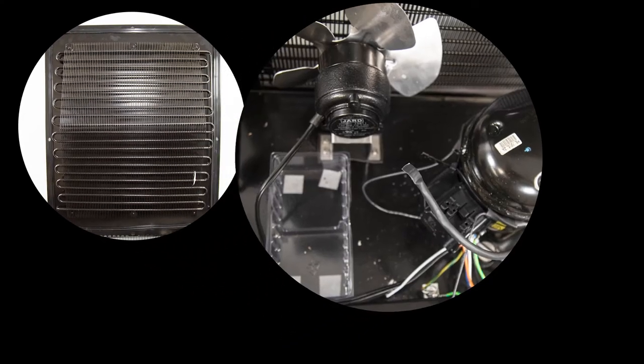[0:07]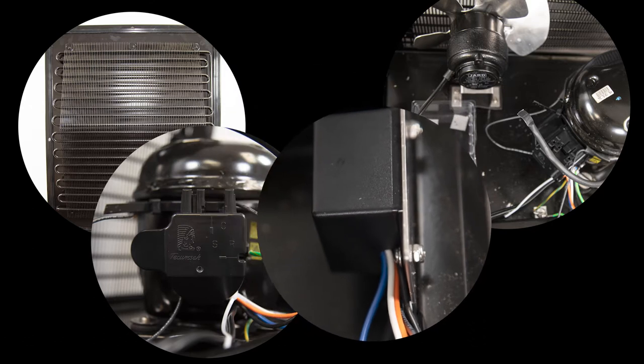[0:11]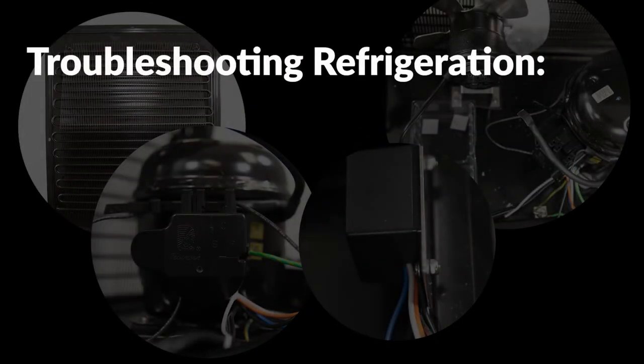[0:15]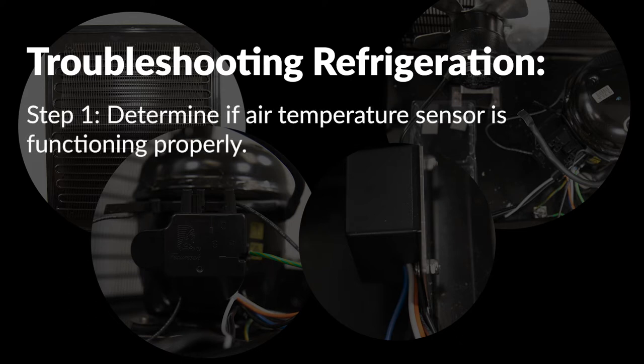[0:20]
Troubleshooting the refrigeration operation is done in two basic steps. Step 1 is to determine if the air temperature sensor appears to be functioning properly. Please see the video link on how to troubleshoot temperature sensors to assist in determining if the cause of the refrigeration issue is related to faulty temperature sensors.
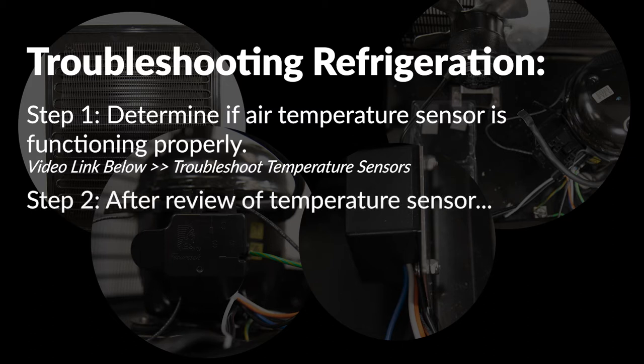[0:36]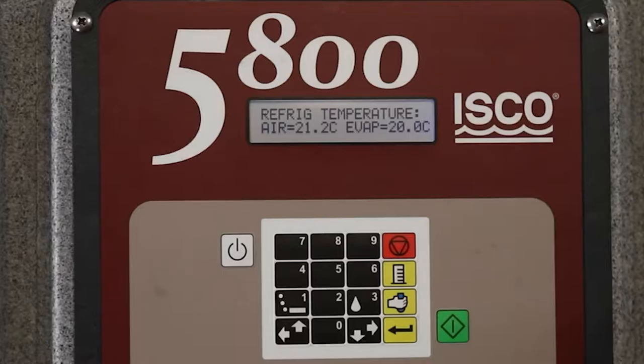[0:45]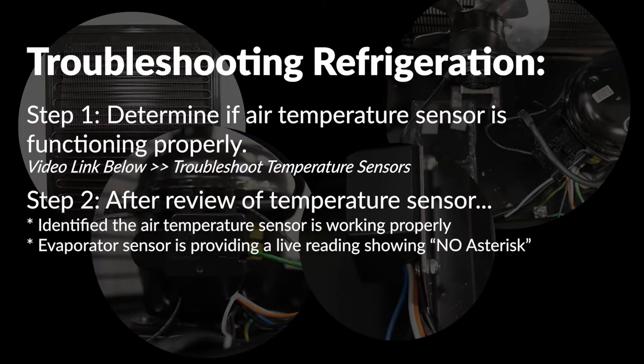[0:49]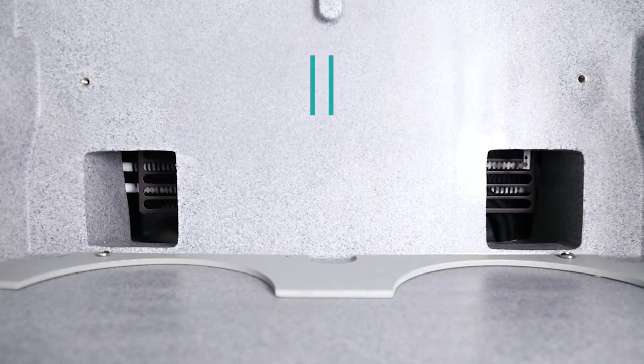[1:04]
Step 2. If you are continuing with this video after reviewing the temperature sensor troubleshooting video, you have identified the air temperature sensor is working properly. The evaporator sensor is providing a live reading showing no asterisk symbol. The sampler is circulating warm air into the sample compartment. There is no large amount of ice buildup on the coils prohibiting cold air circulation.
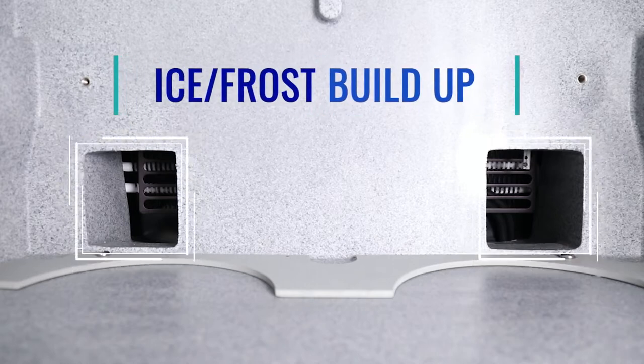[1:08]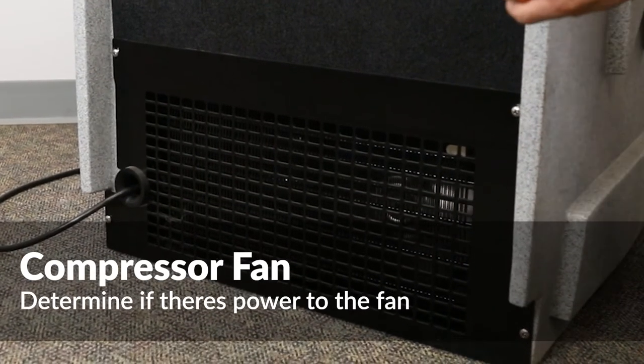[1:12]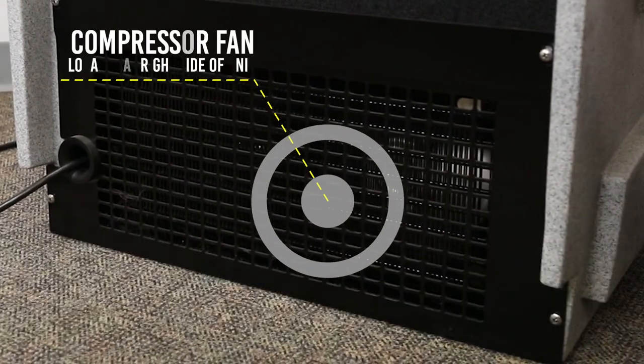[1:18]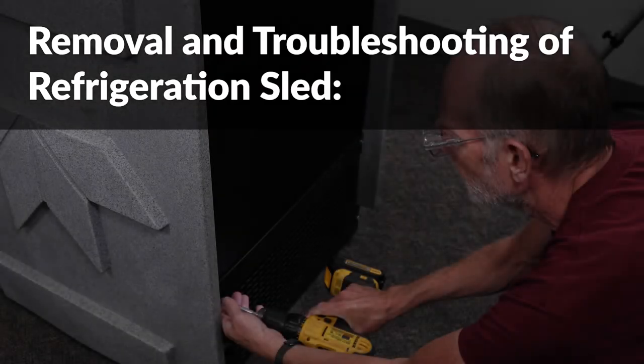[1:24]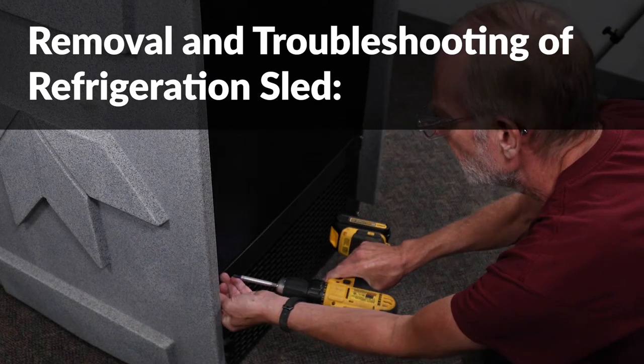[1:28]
Check to see if the compressor fan is running. You should be able to see and feel the air being pushed out of the back of the sampler. The compressor fan might be running, but the compressor itself might not be operating correctly. The next step shows the removal and troubleshooting of the refrigeration sled to determine how to proceed with the repair.
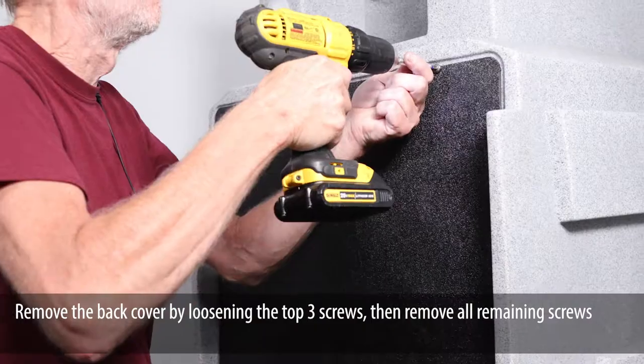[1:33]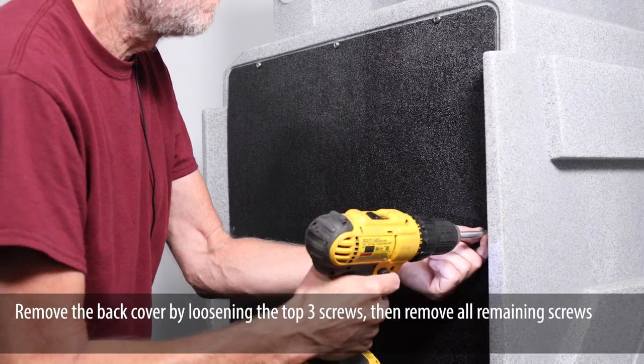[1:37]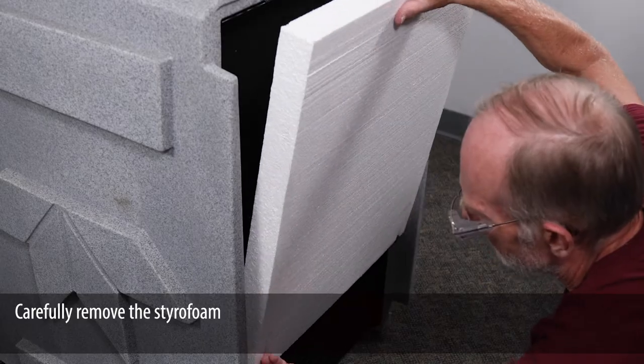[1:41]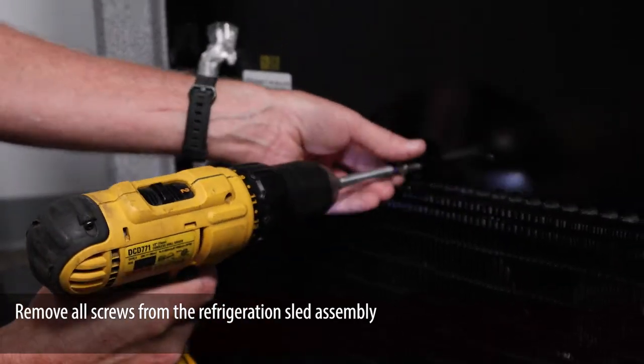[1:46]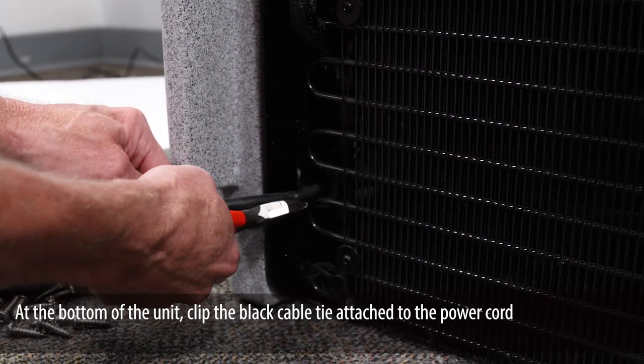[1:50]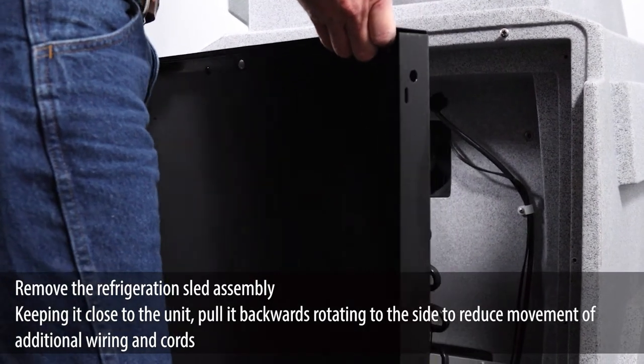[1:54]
From the back of the unit, remove the bottom protection plate. Remove the back cover by loosening the top three screws, then remove all remaining screws. Carefully remove the styrofoam. Remove all screws from the refrigeration sled assembly. At the bottom of the unit, clip the black cable tie attached to the power cord. Remove the refrigeration sled assembly.
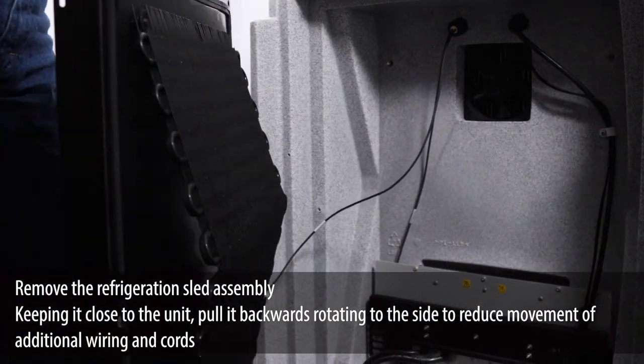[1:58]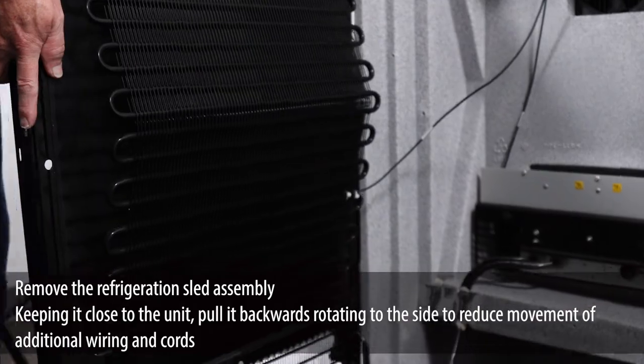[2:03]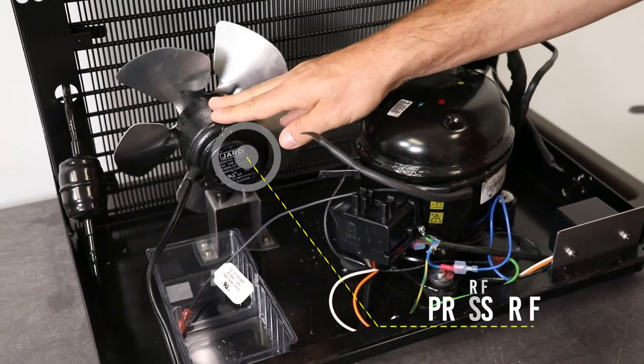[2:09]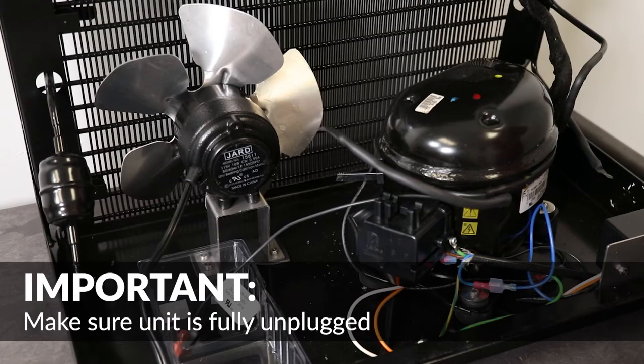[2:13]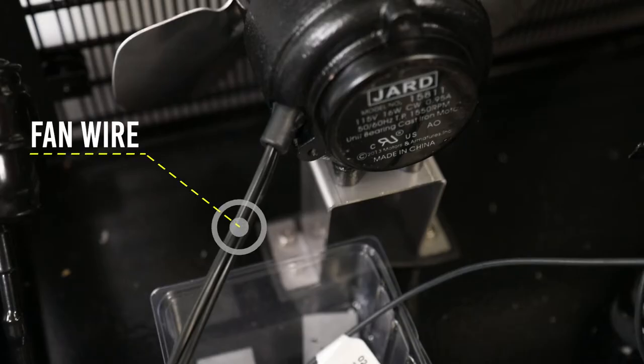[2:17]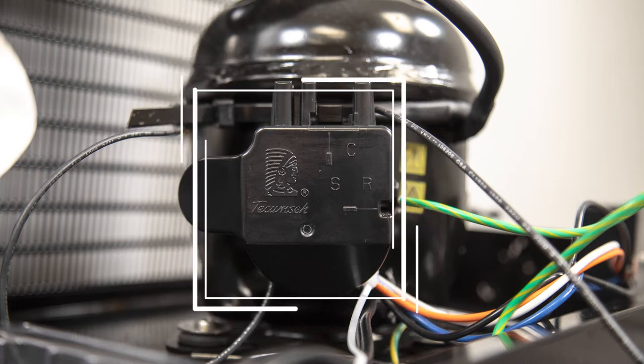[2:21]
Keeping it close to the unit, pull it backwards, rotating to the side to reduce movement of additional wiring and cords. In order to verify if the compressor is actually running, the compressor fan power must be removed to be able to sense the small amount of vibration coming from a running compressor. Locate the compressor fan power harness and follow it back to the compressor side cover.
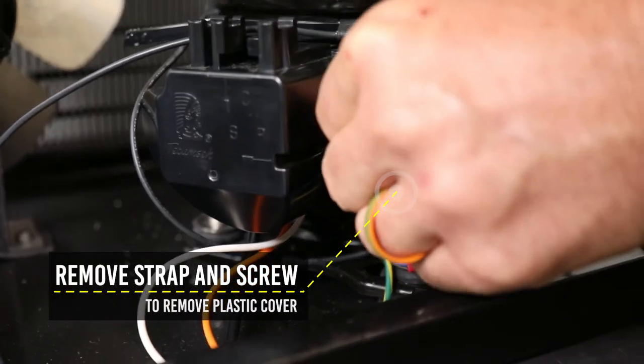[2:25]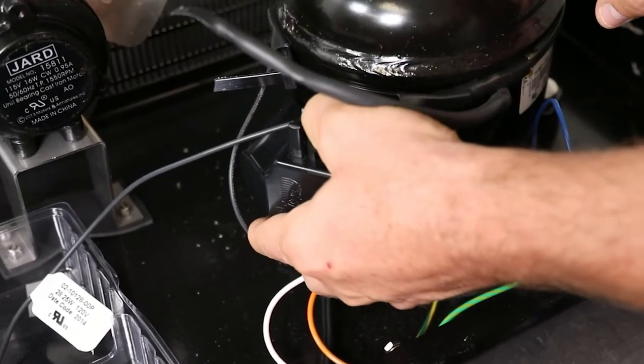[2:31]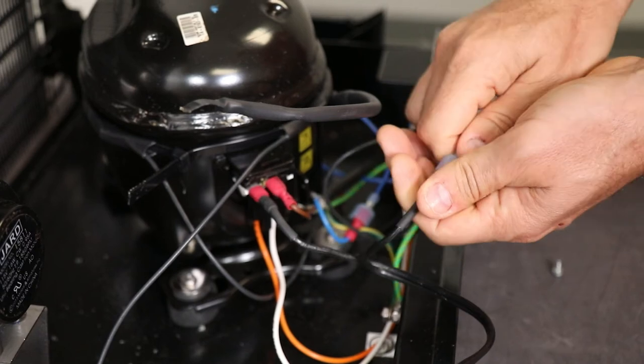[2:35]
Remove the grounding strap and screw from the side of the compressor wiring cover. Press the locking tab and pull to remove the electrical connection cover on the side of the compressor. Locate and disconnect the fan wire going to the compressor relay box.
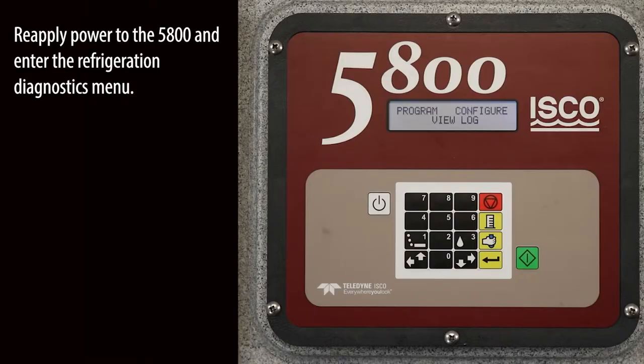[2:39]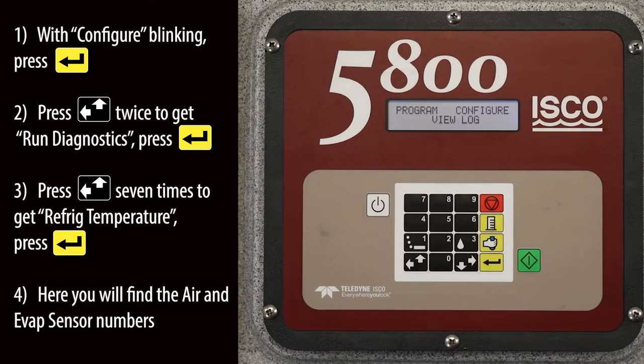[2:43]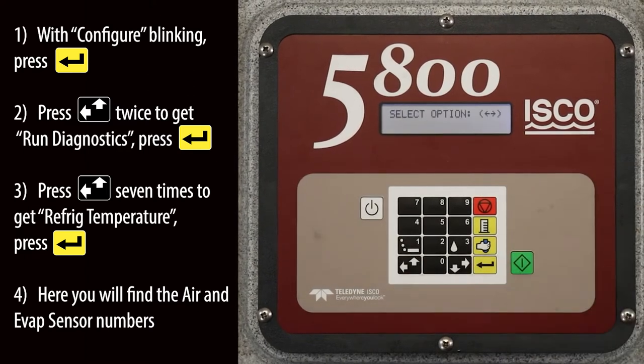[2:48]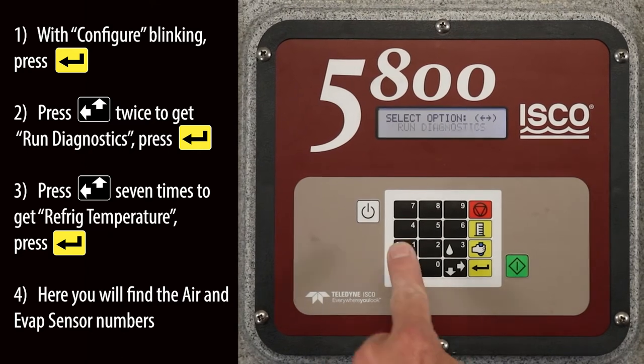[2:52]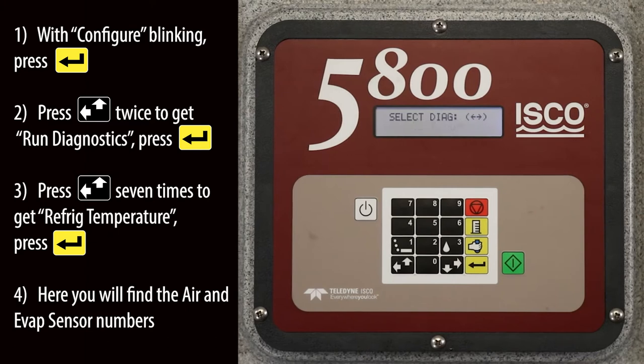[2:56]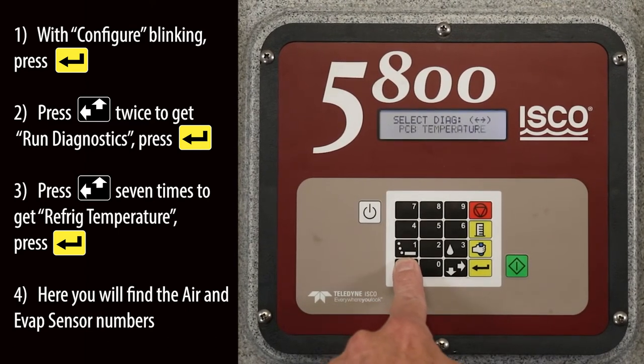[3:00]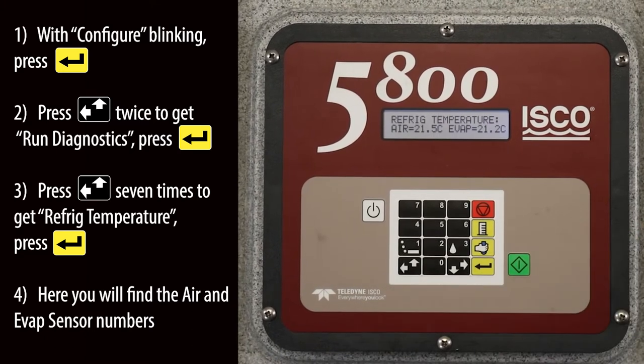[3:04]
Reapply power to the 5800 and enter the refrigeration diagnostics menu. With configure blinking, press the enter key. Press the left up arrow key twice to get run diagnostics, then press the enter key. Press the left up arrow key 7 times to get refrige temperature, then press the enter key. Here you will find the air and evap sensor numbers.
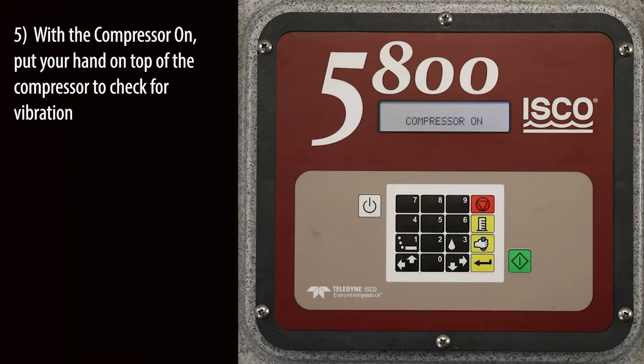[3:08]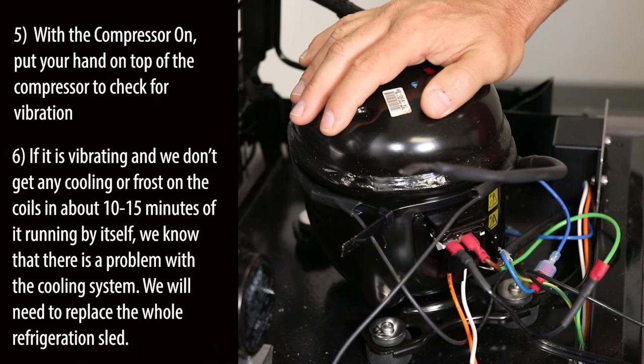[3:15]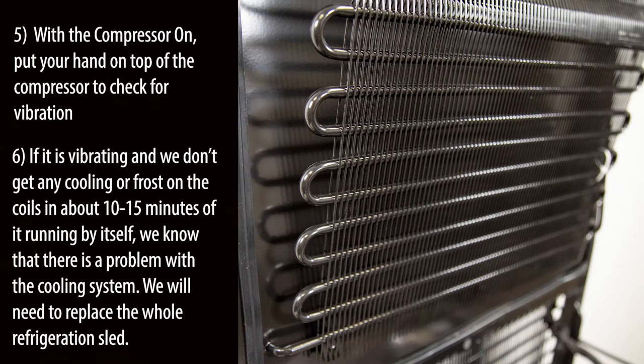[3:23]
With the compressor on, put your hand on top of the compressor to check for vibration. If it's vibrating and there isn't any cooling or frost on the coils in about 10 to 15 minutes of it running by itself, we know that there is a problem with the cooling system. We will need to replace the whole refrigeration sled.
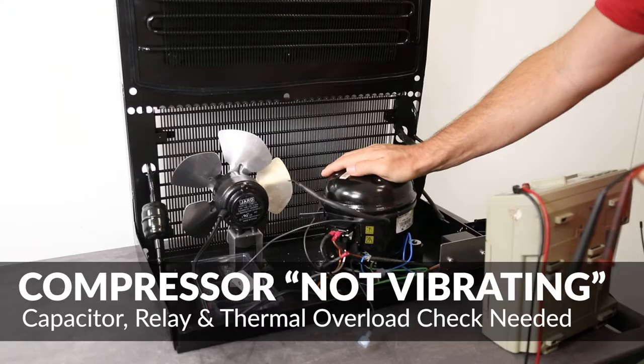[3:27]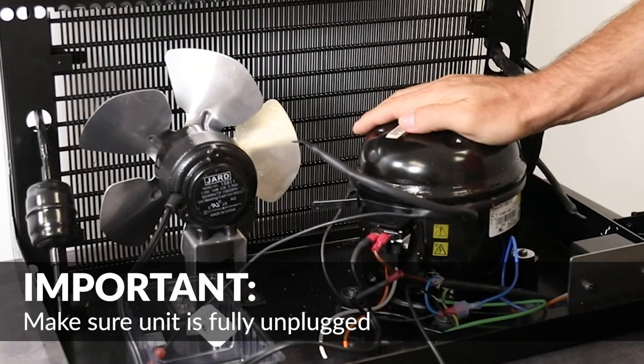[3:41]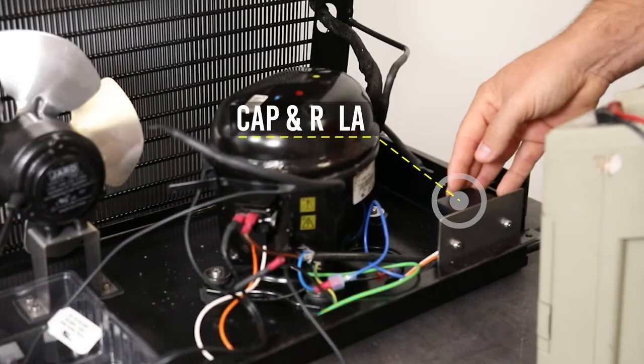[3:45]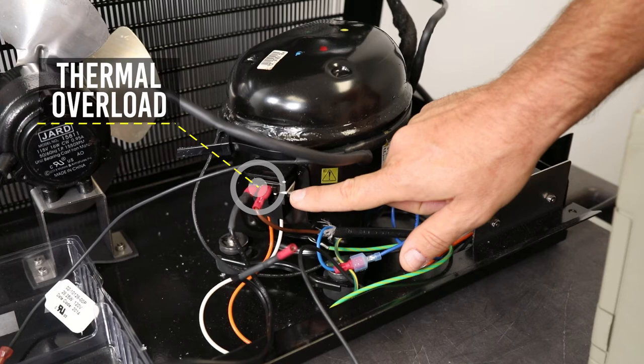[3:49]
With the compressor fan removed from the circuit and the 5800 powered up, if the compressor is not running by indication of slight vibration, the capacitor, relay, and thermal overload must be checked. AC power must be removed for these next checks. The cap and relay box will need to be checked, as well as the thermal overload mounted directly on the compressor.
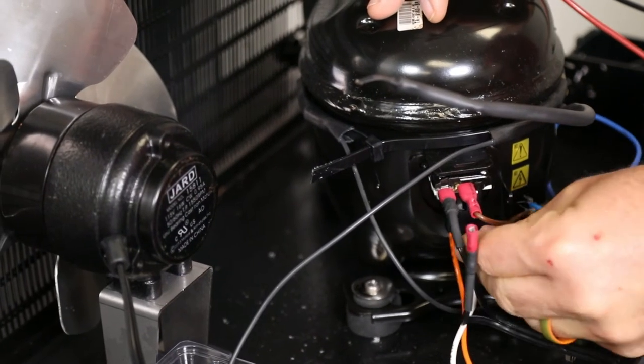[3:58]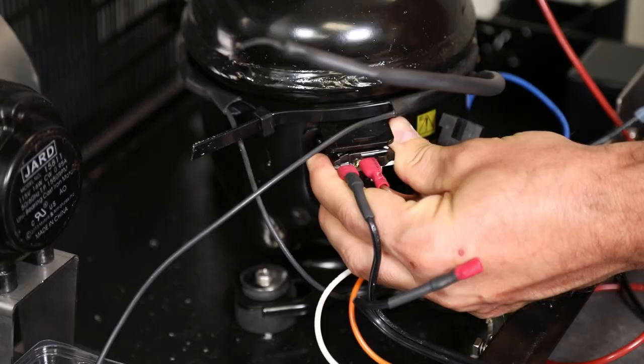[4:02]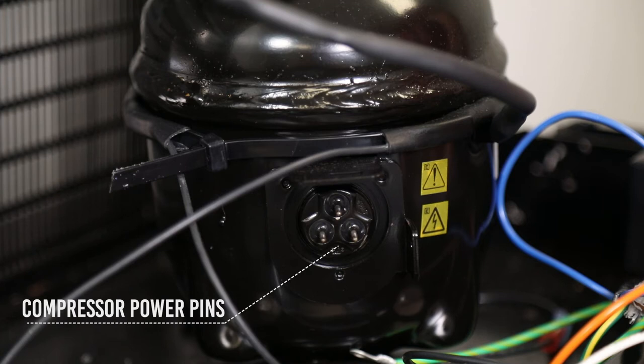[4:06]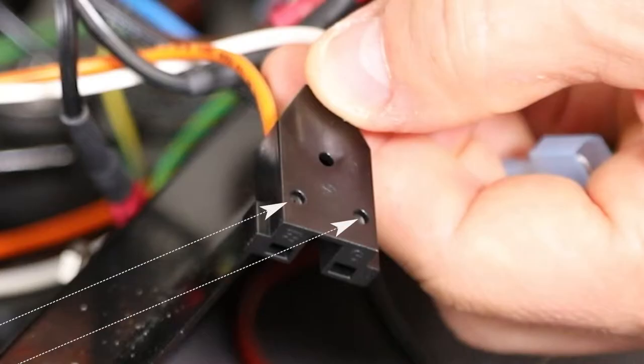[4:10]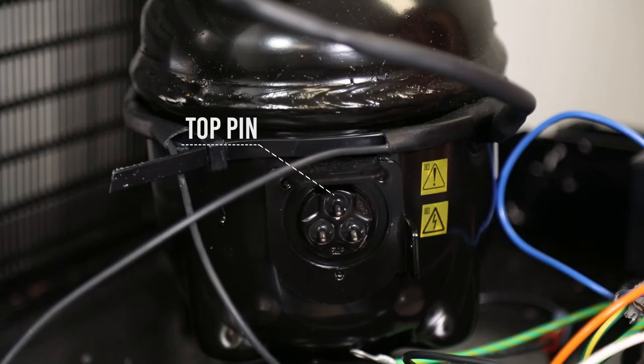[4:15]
Locate and remove the compressor power connection, making note that the orange wire is positioned closest to the compressor fan motor. Locate and remove the thermal overload wiring connection from the compressor. The compressor power pins connect to the compressor power harness with the orange and white wiring. The top pin connects to the thermal overload device.
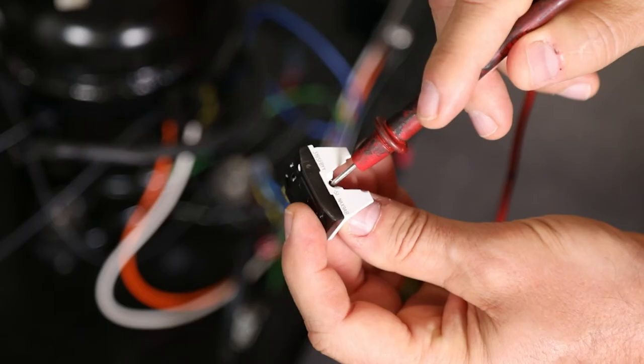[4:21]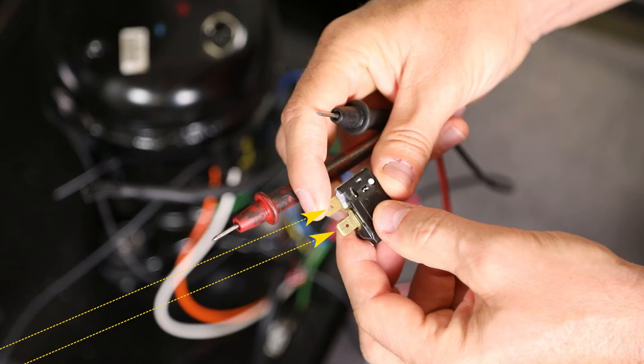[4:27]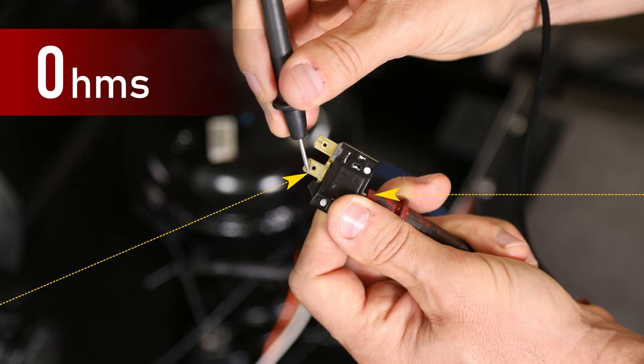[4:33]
Using a digital voltmeter measuring resistance, connect one lead to the single socket terminal on the thermal overload and measure resistance from the single socket to each of the terminals. There should be nearly 0 ohms resistance between these points. Having even a few ohms resistance can indicate a faulty thermal overload device that would need to be replaced.
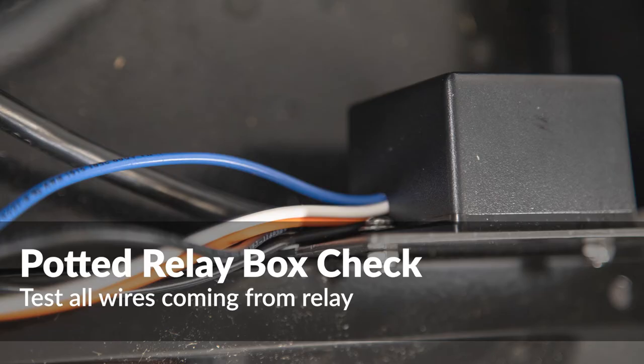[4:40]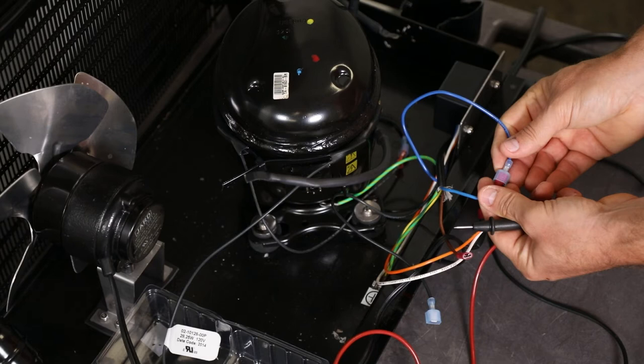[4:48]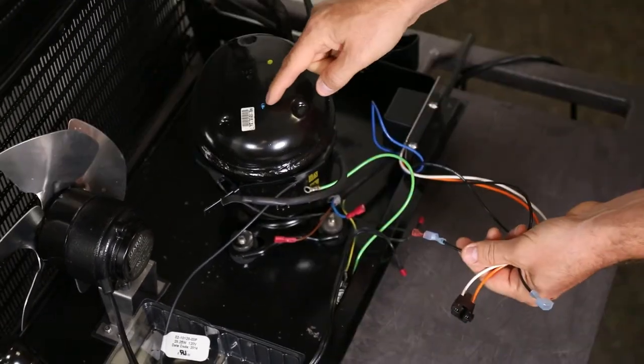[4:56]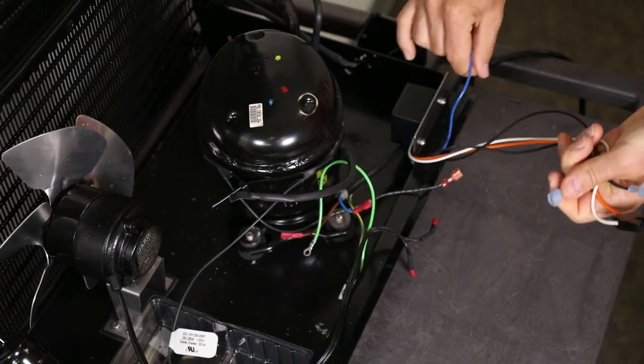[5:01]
The compressor relay can be checked. The relay is completely potted, so the checks must be done on the attached wiring connections. Locate and remove the blue AC return line that connects the relay box to the AC power cord. On newer models, locate and remove the compressor heater wire harness so that all wiring from the relay box is now isolated from the unit.
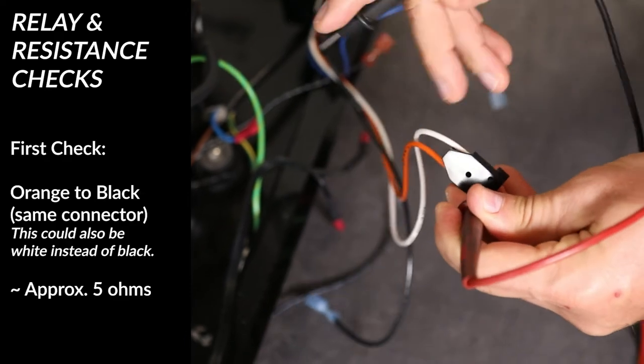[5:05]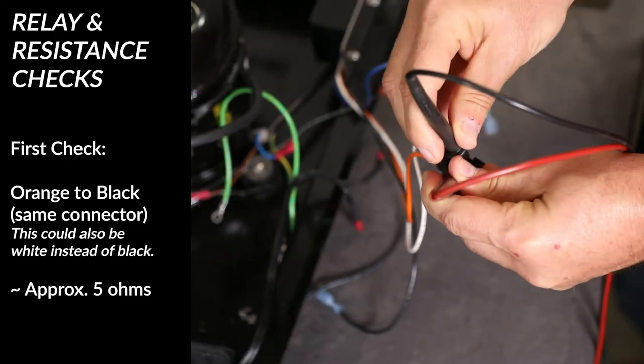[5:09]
Check the resistance of the compressor power harness by measuring resistance between the two connections. Resistance should be approximately 5 ohms.
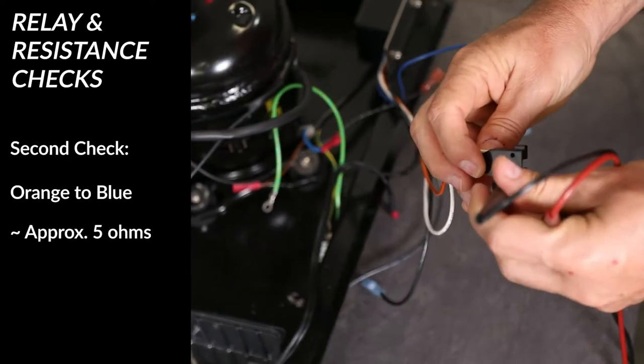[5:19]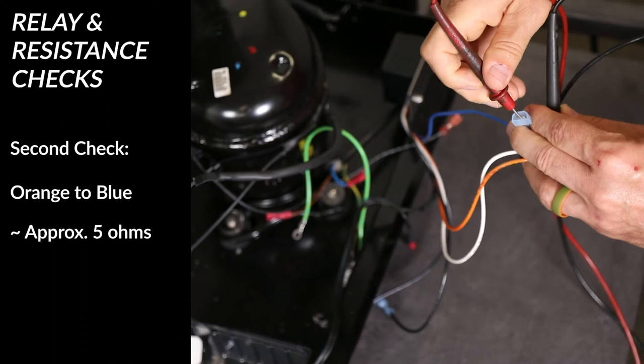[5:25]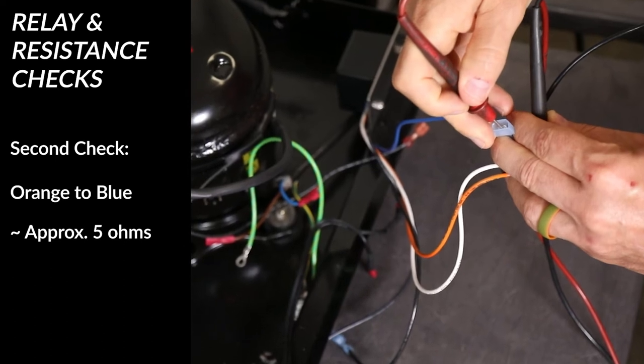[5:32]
Any value higher than 7 ohms would indicate a faulty relay, and the potted relay box will need to be replaced. Checking the resistance of the blue AC return line by connecting one lead of the voltmeter to the orange wire connector on the compressor power harness to the blue AC return line coming from the relay box, and measure resistance of approximately 5 ohms.
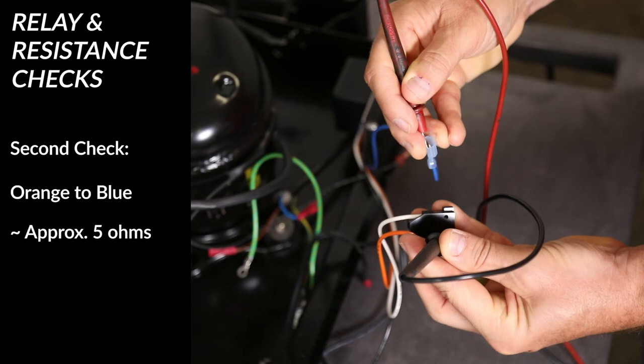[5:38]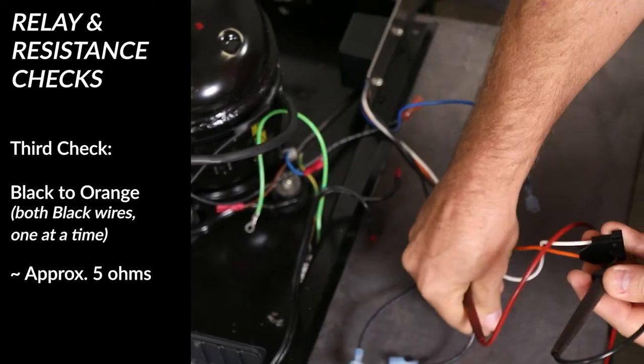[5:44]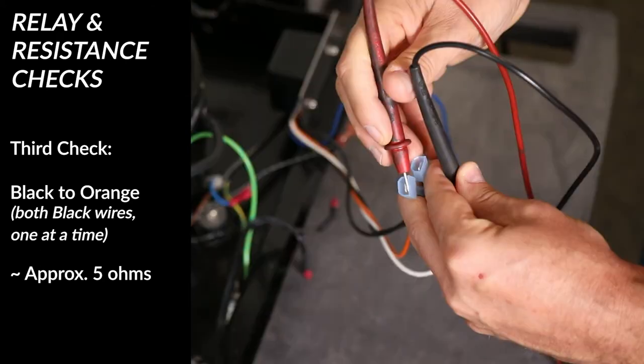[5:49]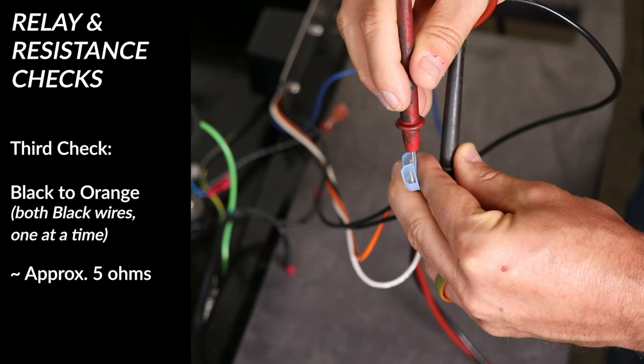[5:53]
Any value higher than 7 ohms would indicate a faulty relay, and the potted relay box will need to be replaced. Check the resistance from each of the black wires on the potted relay box to the orange wire connection for the compressor power connector. Either connection should measure 5 ohms.
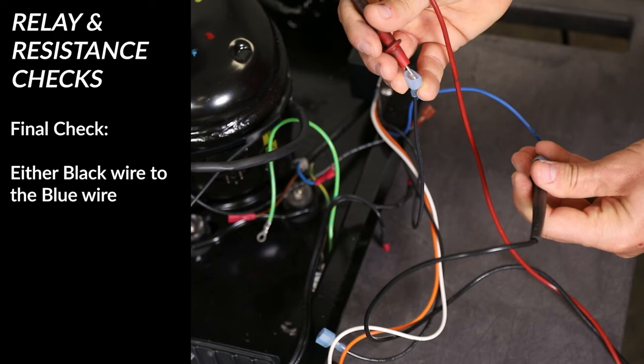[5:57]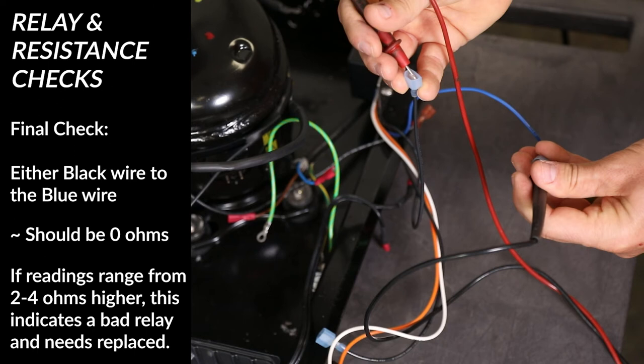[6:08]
Check the resistance from either of the black wires on the potted relay box to the blue AC return line coming from the relay box. Either connection should measure 0 ohms. If readings range from 2 to 4 ohms higher, this indicates a bad relay and needs replaced.
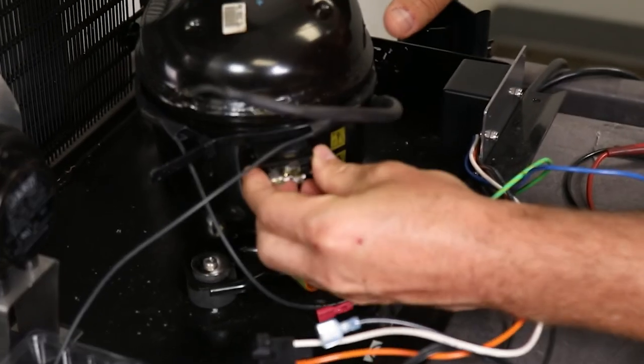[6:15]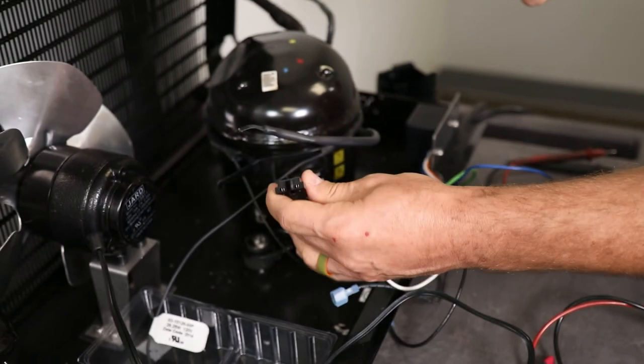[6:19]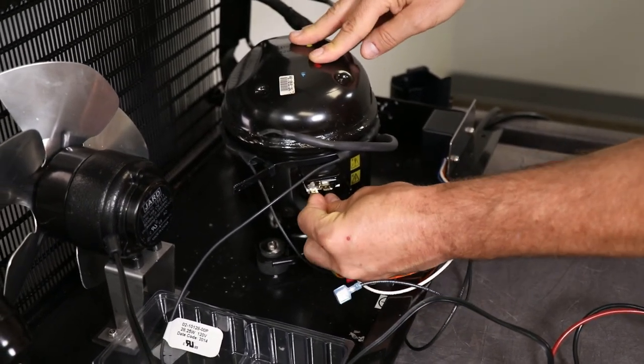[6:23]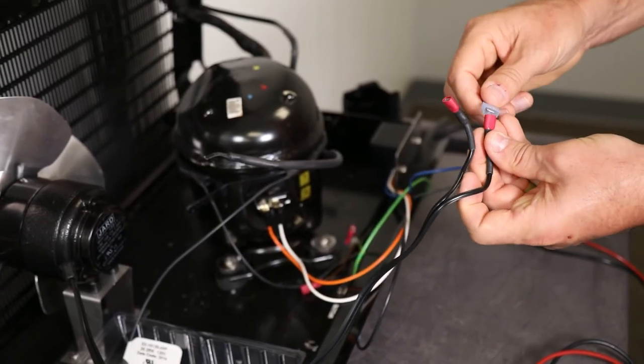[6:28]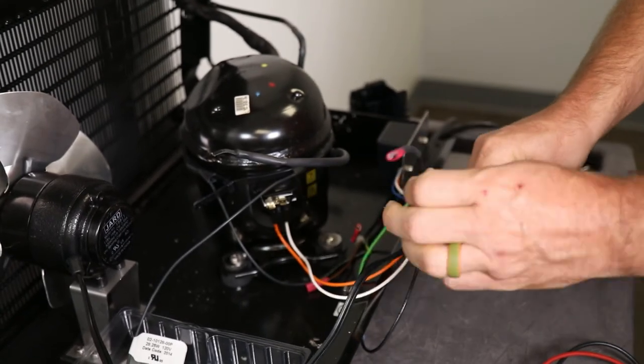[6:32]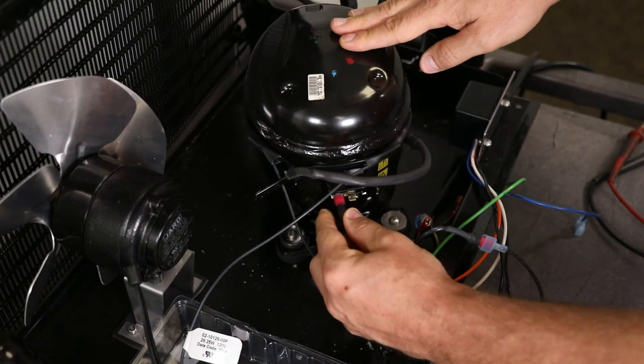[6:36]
Reinstall the compressor thermal overload to the top pin on the compressor. Next, install the compressor power connector, making sure that the orange wire connection is positioned closest to the compressor fan motor. Locate and connect one of the wires from the compressor fan to one of the black wires coming from the potted relay box. Connect the other compressor fan wire to the left connector on the compressor thermal overload.
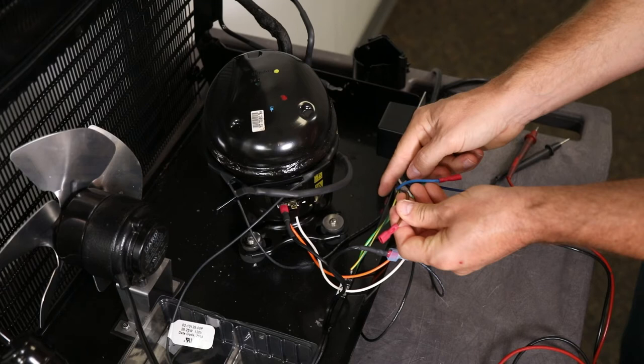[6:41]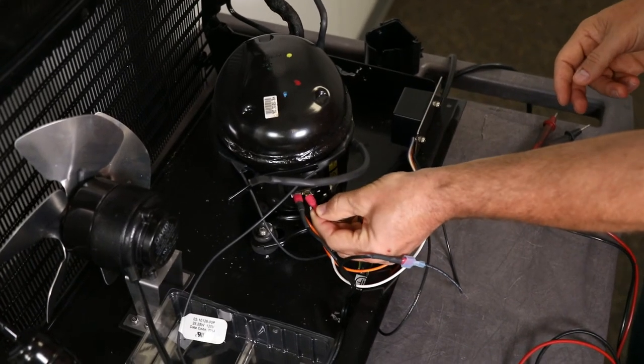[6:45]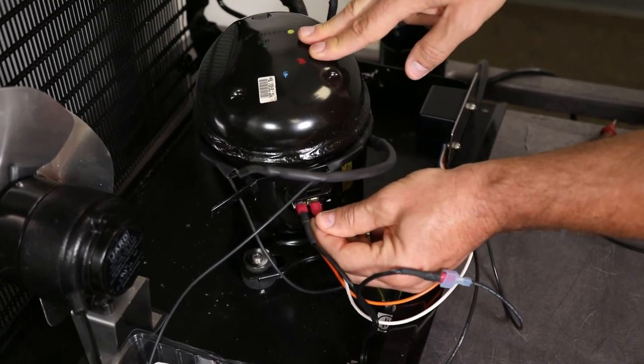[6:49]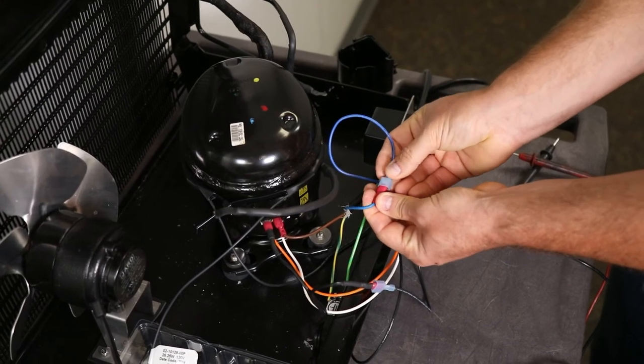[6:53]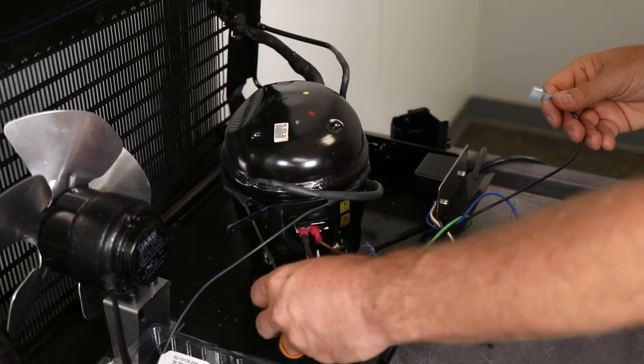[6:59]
Locate the AC power wiring harness coming from the 5800 power supply. Connect the brown wire from this harness to the right side connector on the thermal overload on the side of the compressor. Connect the blue wire from the potted relay box to the blue wire coming from the 5800 power supply harness. Connect the remaining black wire from the potted relay box to the compressor heater harness.
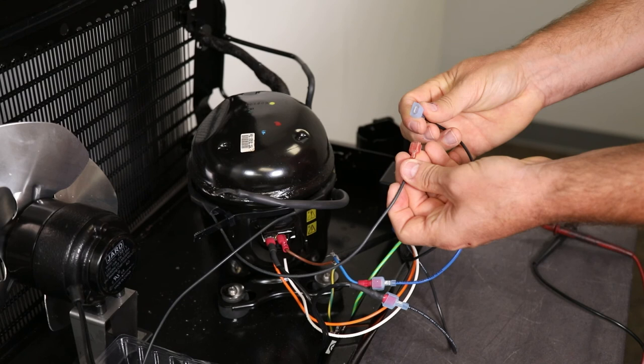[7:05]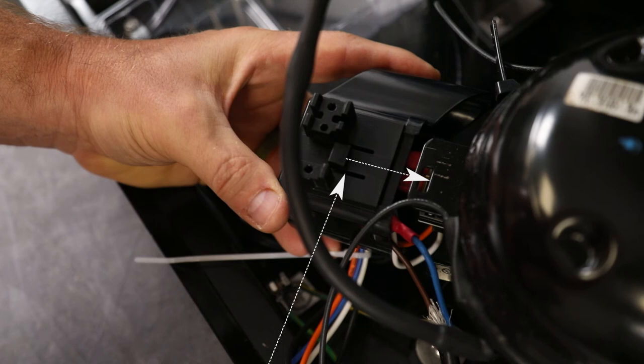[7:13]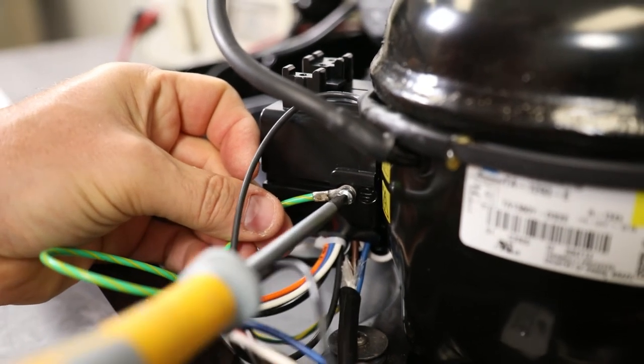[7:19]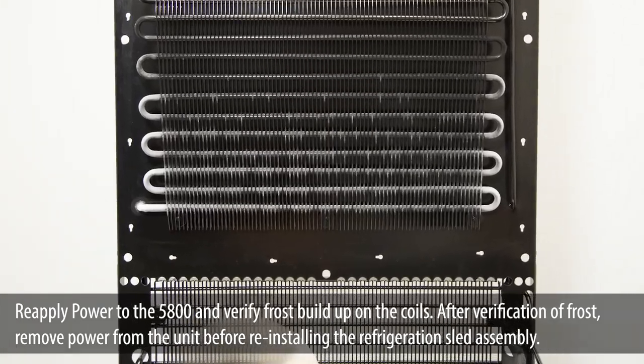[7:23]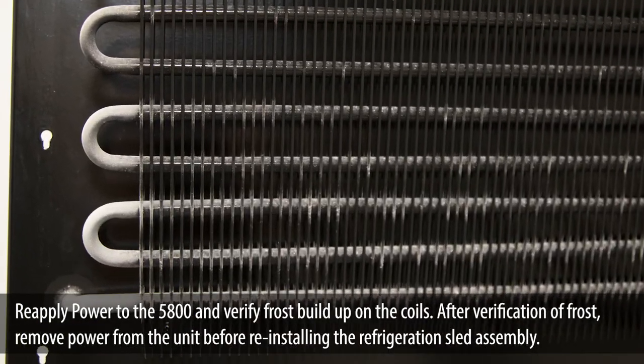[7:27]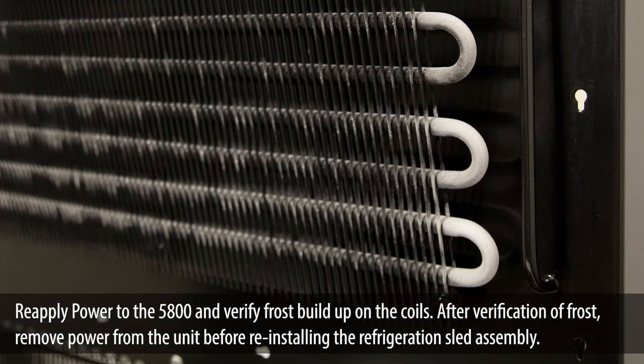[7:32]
Older power supplies do not have the additional wiring needed to power the compressor heater strap on the newer replacement sleds. Locate the compressor wiring cover and reinstall onto the side of the compressor and secure with the screw and grounding strap. Reapply power to the 5800 and verify frost buildup on the coils. After verification of frost, remove power from the unit before reinstalling the refrigeration sled assembly.
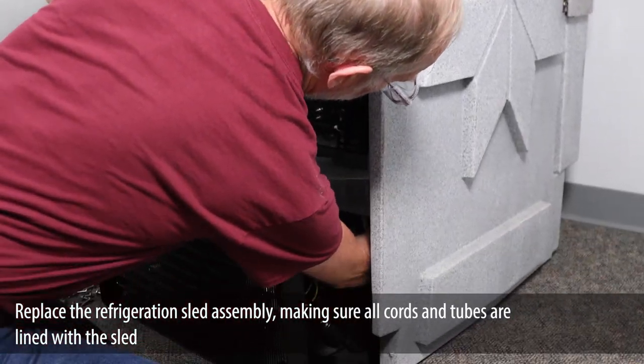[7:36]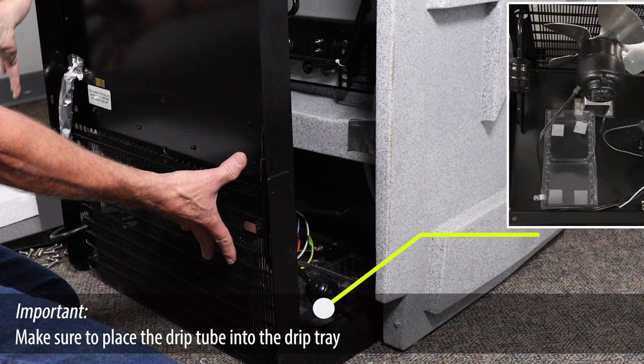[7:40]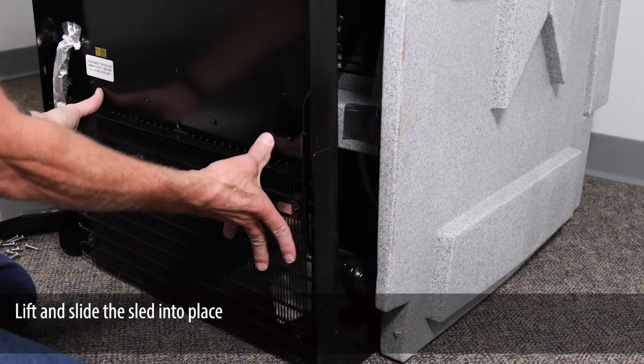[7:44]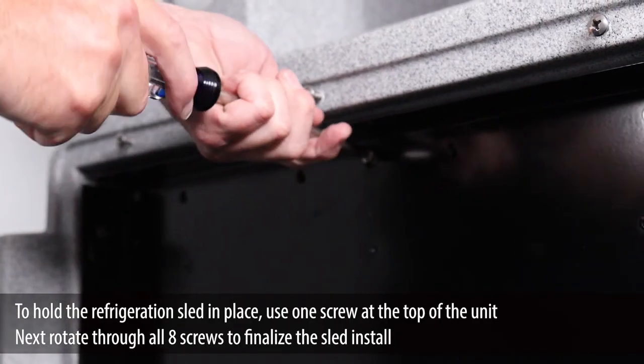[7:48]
Replace the refrigeration sled assembly, making sure all cords and tubes are lined with the sled. Important! Make sure to place the drip tube into the drip tray. Lift and slide the sled into place. To hold the refrigeration sled in place, use one screw at the top of the unit.
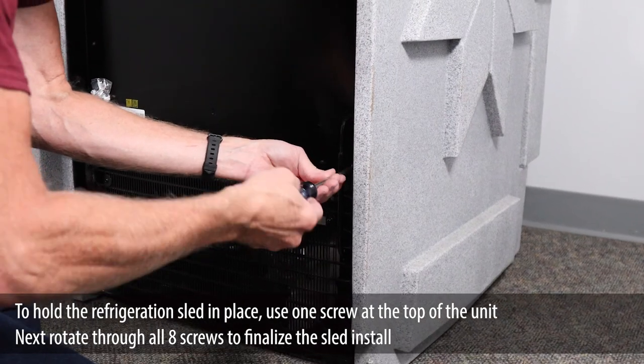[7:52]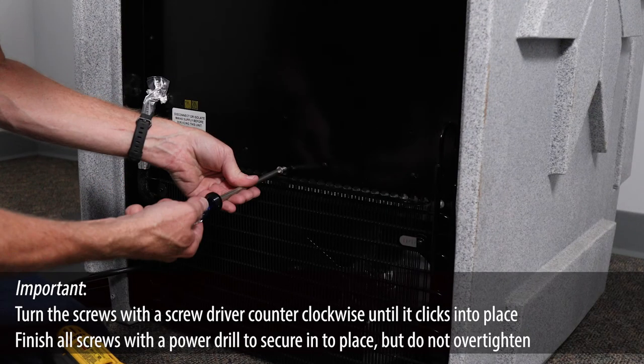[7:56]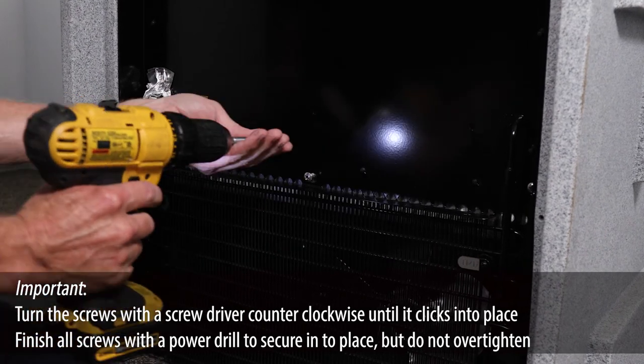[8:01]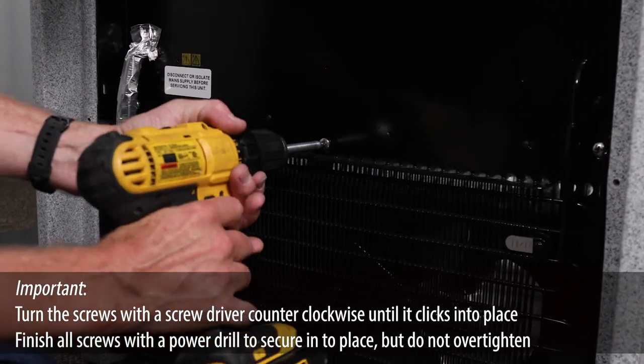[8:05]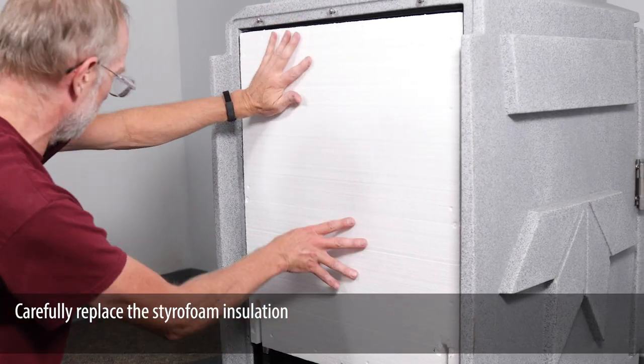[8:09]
Next, rotate through all 8 screws to finalize the sled install. Important! Turn the screws with a screwdriver counterclockwise until it clicks into place. Finish all screws with a power drill to secure into place, but do not over-tighten. Carefully replace the styrofoam insulation.
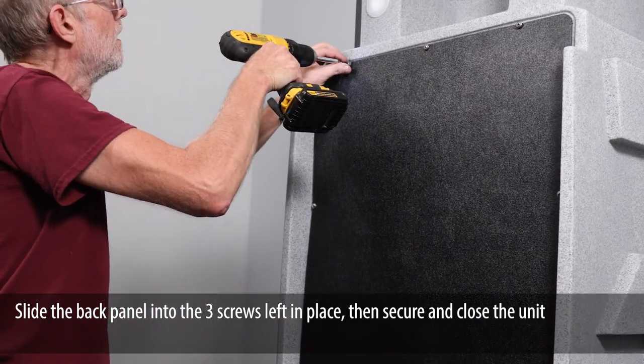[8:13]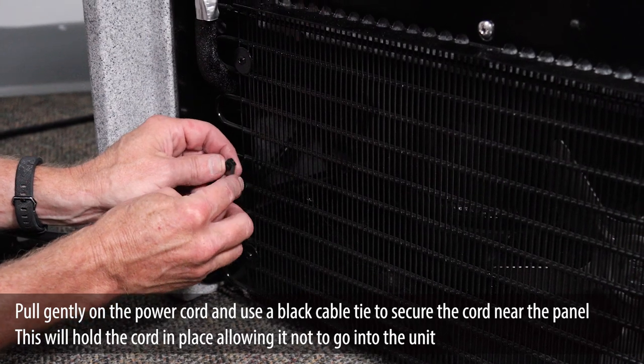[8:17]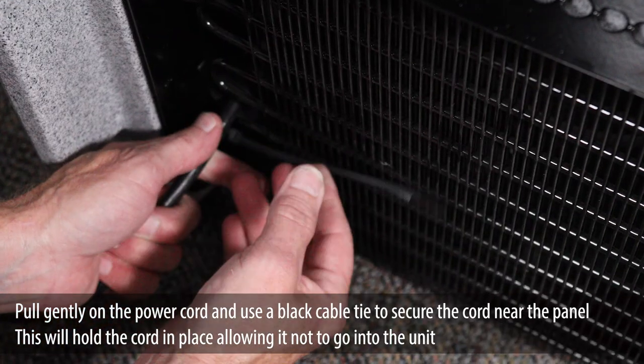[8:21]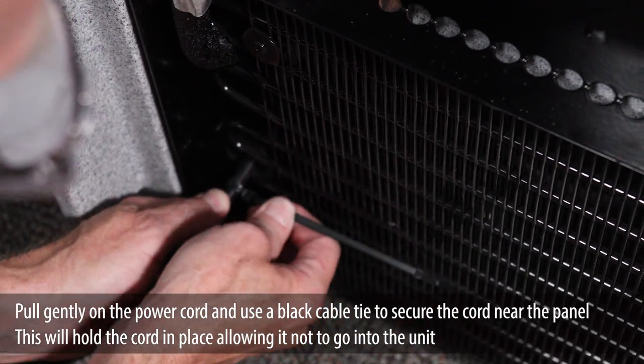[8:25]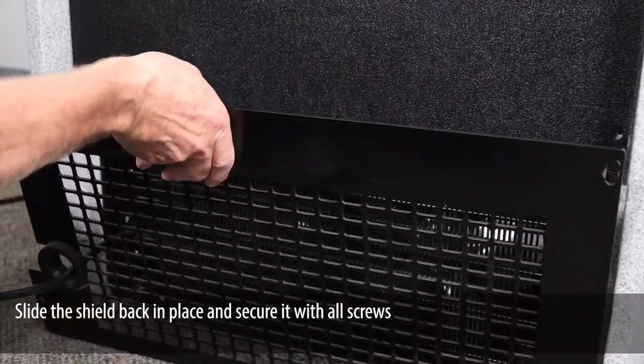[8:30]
Slide the back panel into the 3 screws left in place, then secure and close the unit. Pull gently on the power cord and use a black cable tie to secure the cord near the panel. This will hold the cord in place, allowing it not to go into the unit. Clip any excess cable tie from the power cord. Slide the shield back in place and secure it with all screws.
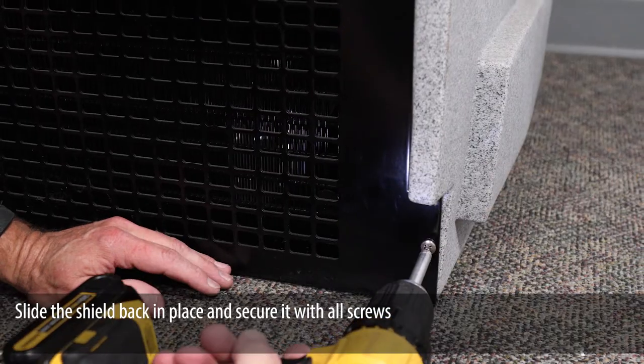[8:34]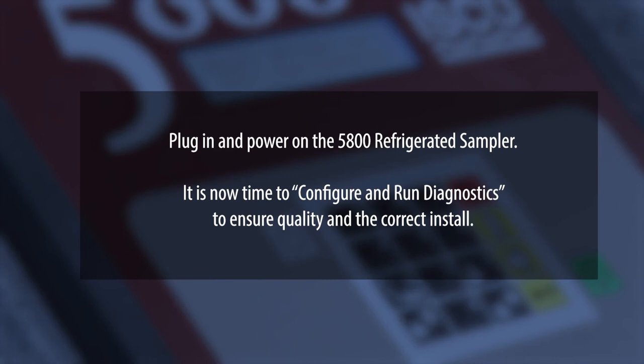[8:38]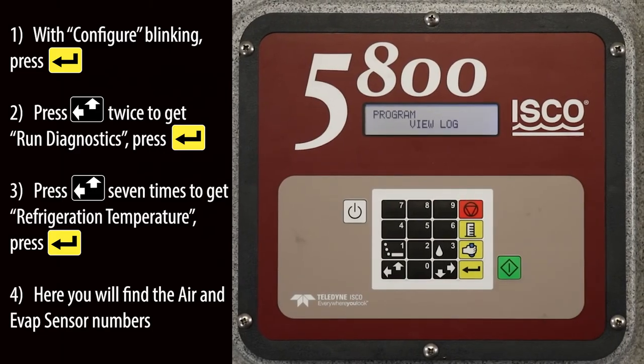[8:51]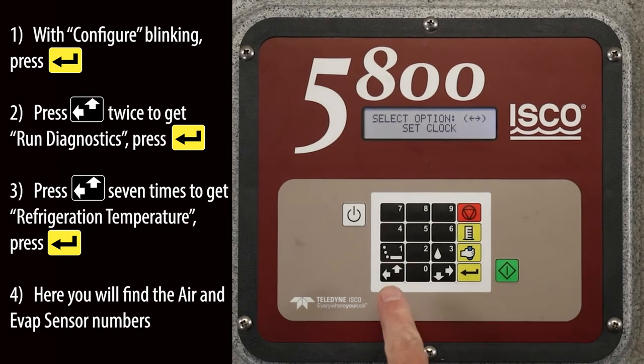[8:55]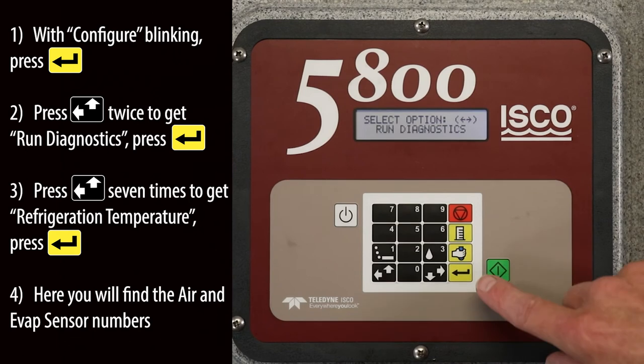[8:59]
Plug in and power on the 5800 refrigerated sampler. It is now time to configure and run diagnostics to ensure quality and the correct install. With configure blinking, press the enter key. Press the left up arrow button twice to get run diagnostics, then press the enter key.
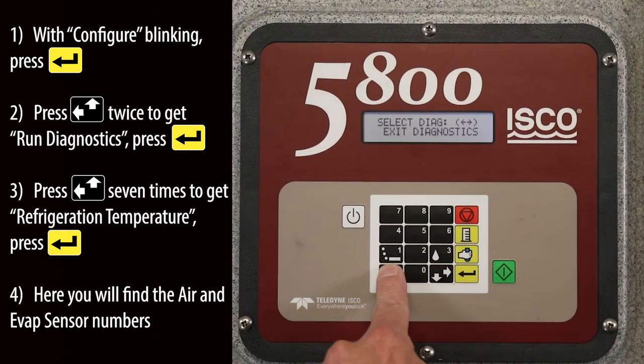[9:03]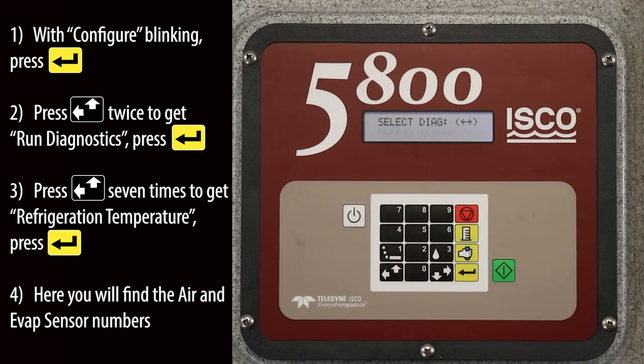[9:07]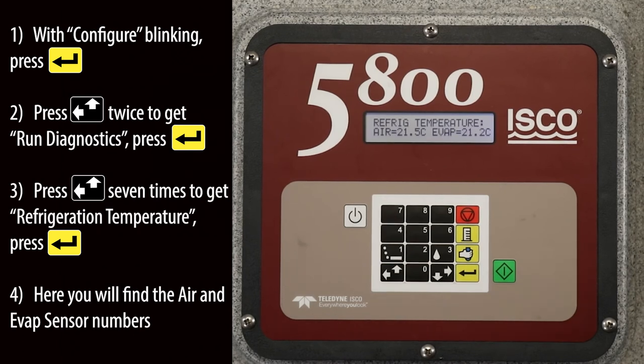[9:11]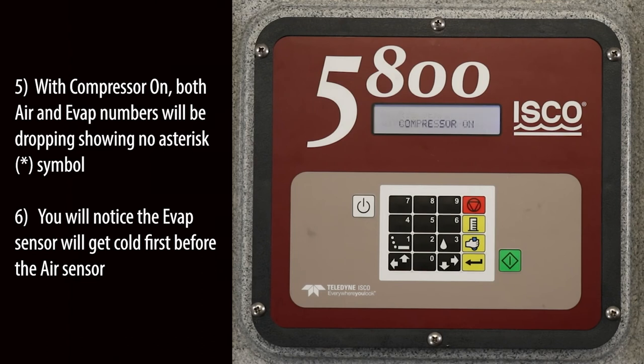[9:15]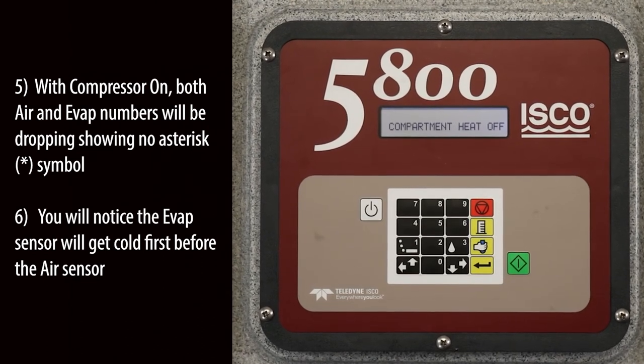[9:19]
Press the left up arrow button 7 times to get refrigeration temperature, and press the enter key. Here you will find the air and evap sensor numbers. With compressor on, both air and evap numbers will be dropping, showing no asterisk symbol. You will notice the evap sensor will get cold first before the air sensor.
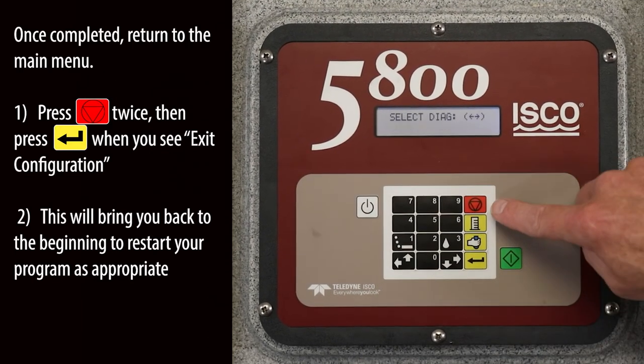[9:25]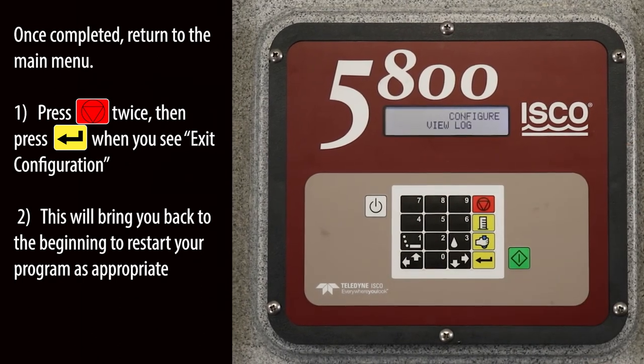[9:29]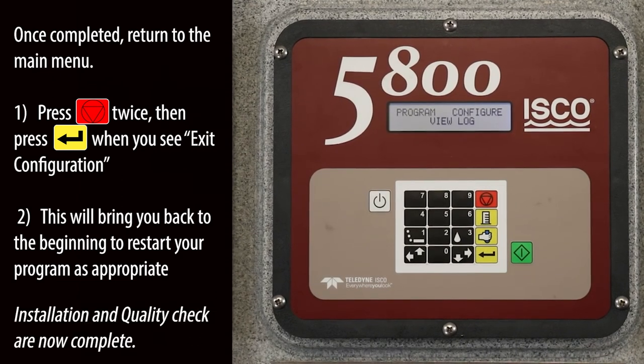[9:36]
Once completed, return to the main menu. Press exit twice, then press enter when you see exit configuration. This will bring you back to the beginning to restart your program as appropriate. The installation and quality check are now complete.